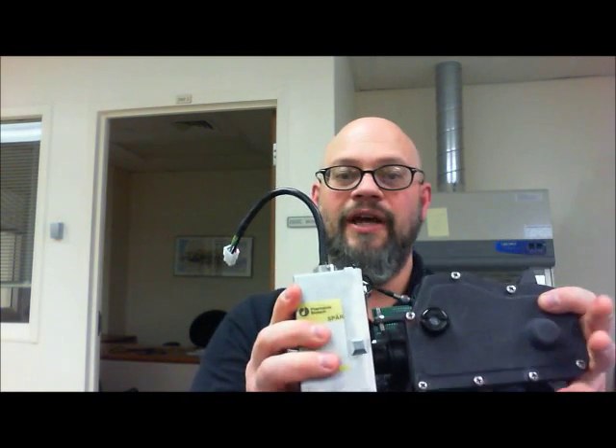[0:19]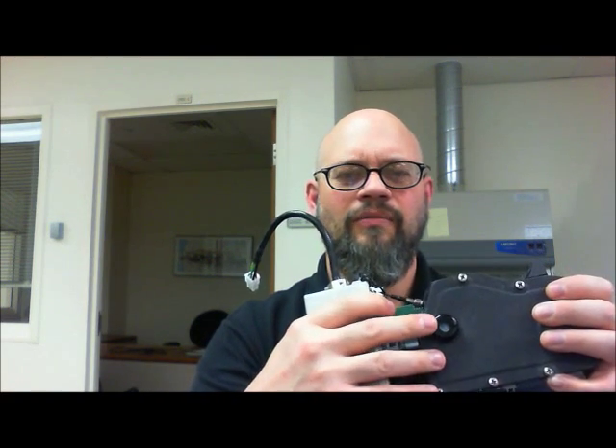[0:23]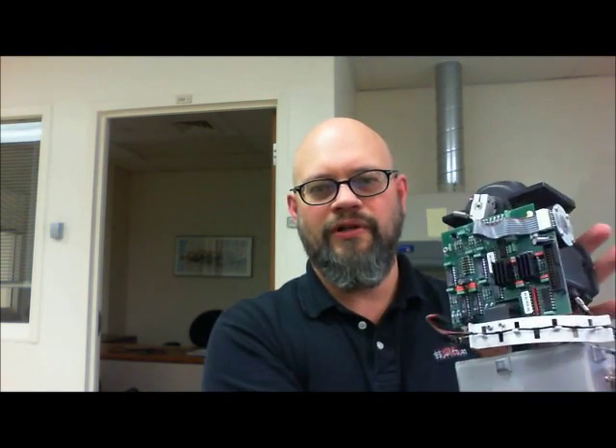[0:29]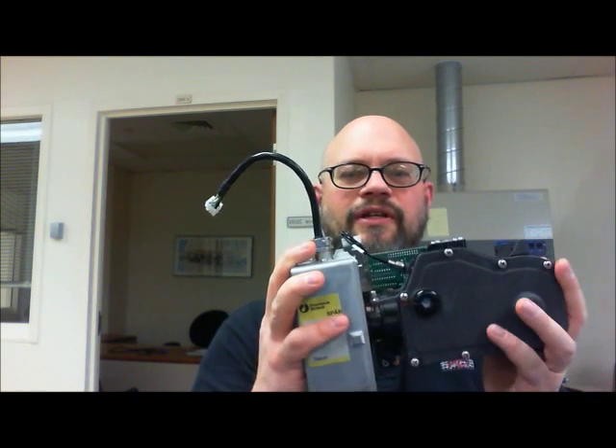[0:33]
I'm here to show you the procedure on how to replace the lamp on the GE UV900 and lubricate the monochromator as well. Okay, so once you get your monochromator assembly out of the UV900, this is what you have. You have a humidity meter here where you can put desiccant if you need it. And you have your board and your fiber optics. So this is your lamp assembly and this is your monochromator itself.
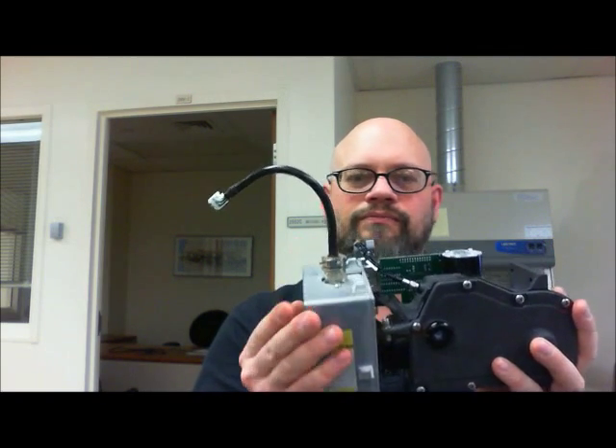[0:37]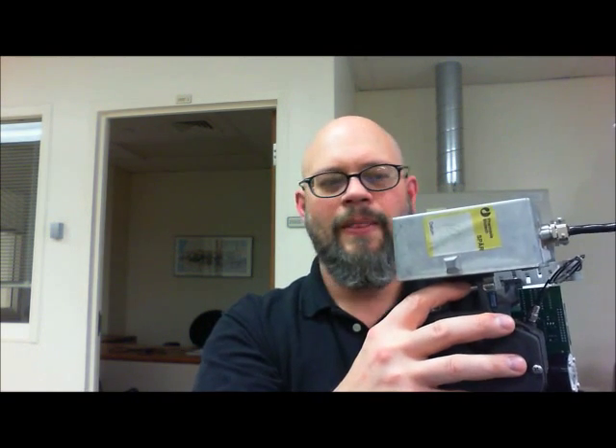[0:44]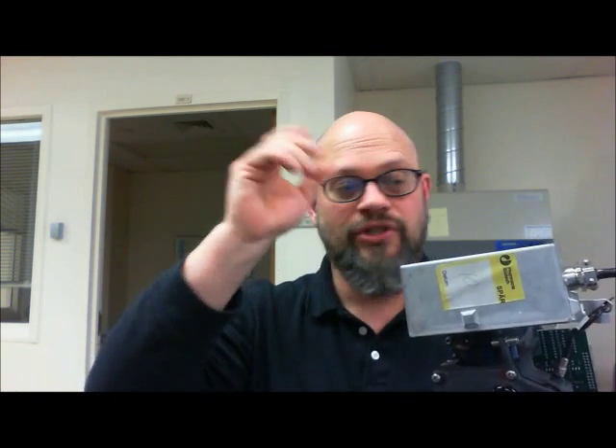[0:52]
Once you have it at this point, there will be two 7mm screws in here. They're difficult to get to. They're not hard to get out, but they're just difficult to get to. It's a little quarter turn at a time. And once you get those out, you go ahead and you work this loose. It's a nice machine fit.
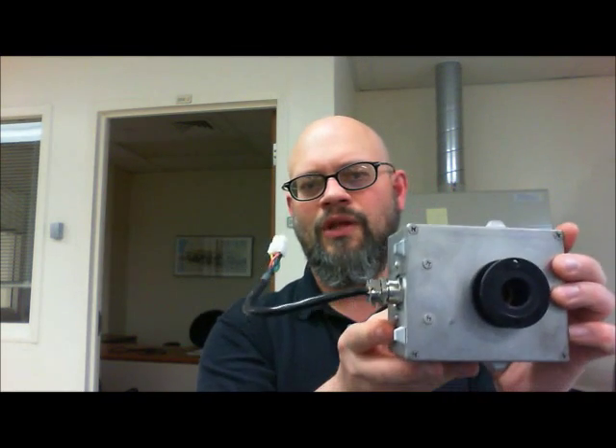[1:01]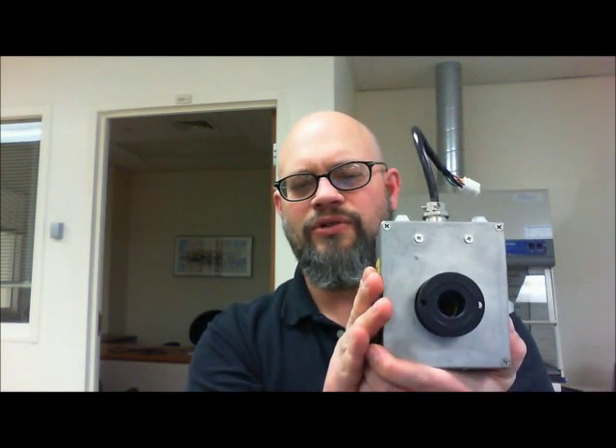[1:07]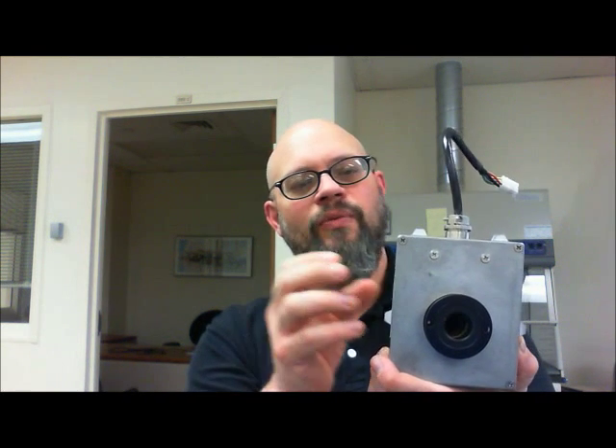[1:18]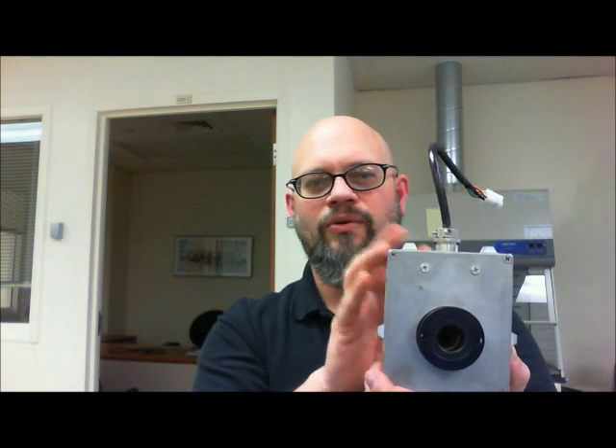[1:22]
So this is your lamp module. It is what it is. This is a GE. You used to be able to source the UV lamps and just replace the internal lamp to this assembly and just use the whole thing over again. But I'm no longer able to source those lamps. So we can order these from GE or we can order them from Sontec, and you can contact me or we have the part numbers available for these.
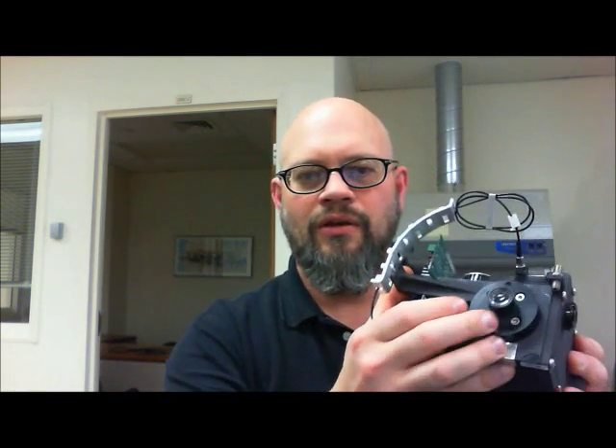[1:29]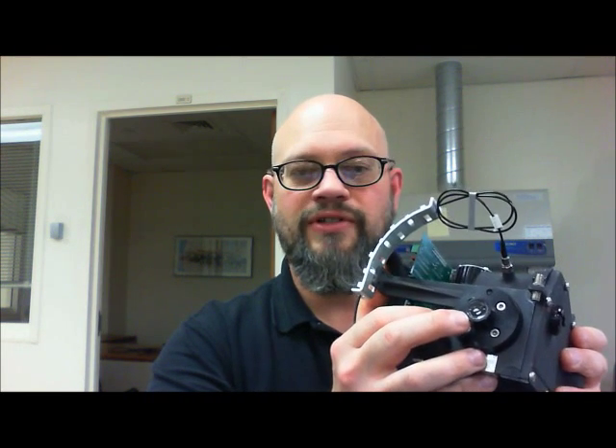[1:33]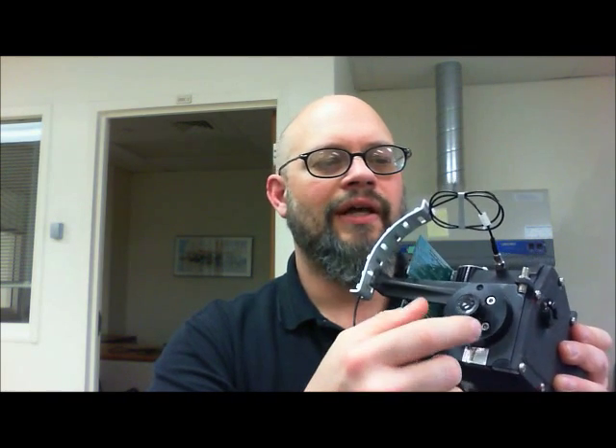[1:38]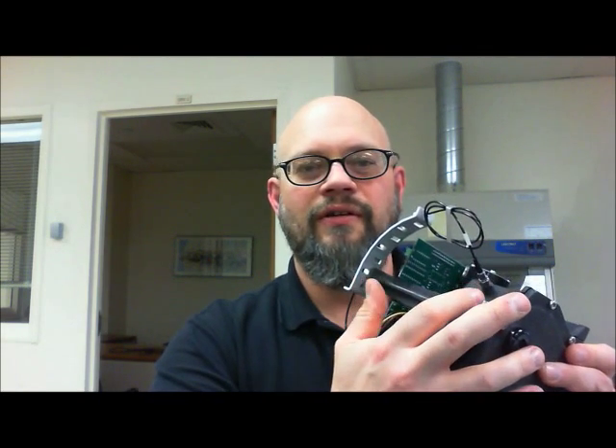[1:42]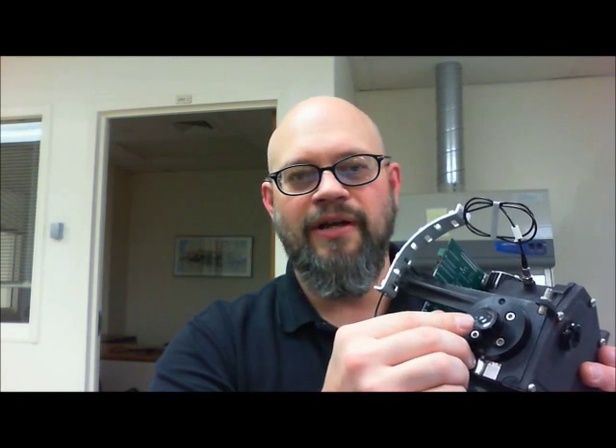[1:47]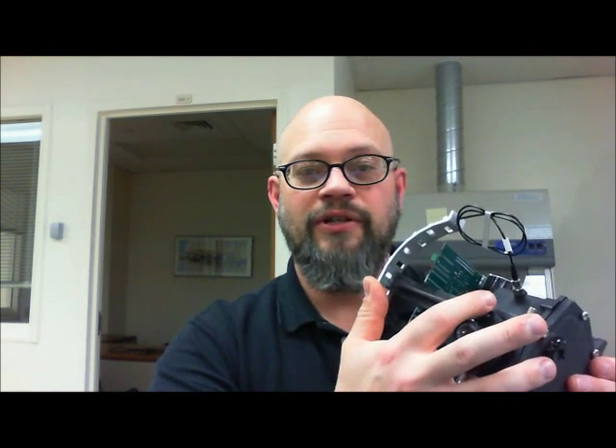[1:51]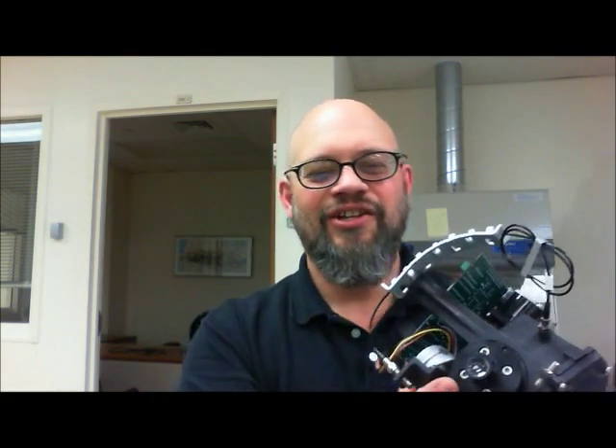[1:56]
Once you get that done, you have a lens in here. This lens on the older systems will fall out. The UV light degrades the epoxy that holds this lens in. It will fall out. This is a fairly expensive piece of equipment. Go ahead and try and epoxy it back in. I've had it work most of the time. This particular one it didn't work, which is making a good training piece. So once you get that done, hopefully this didn't come out.
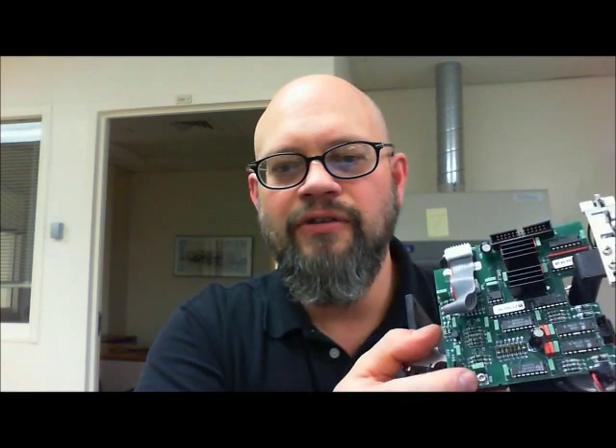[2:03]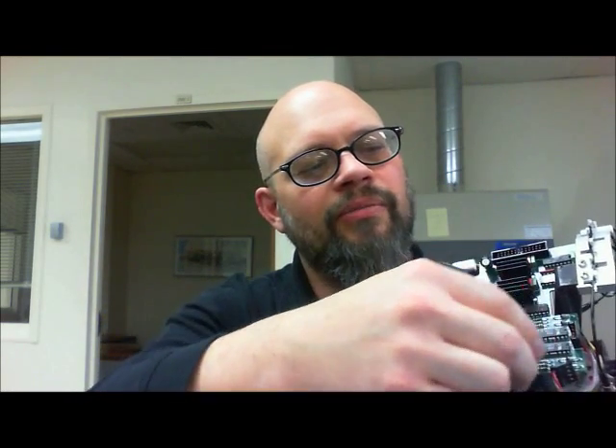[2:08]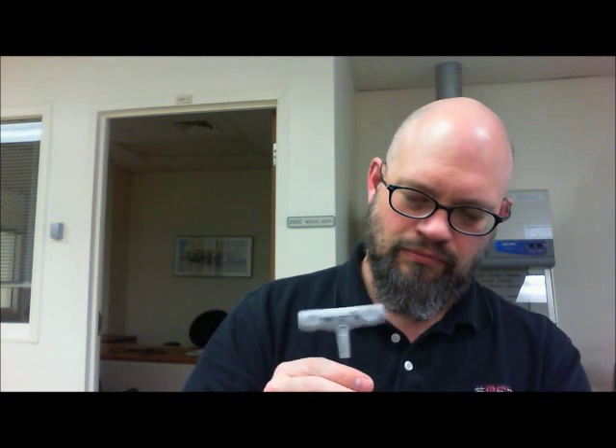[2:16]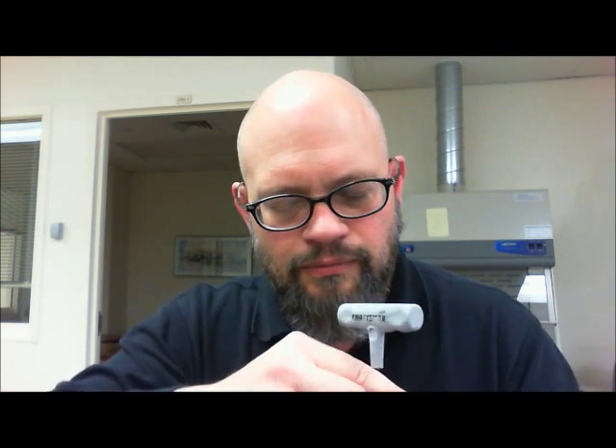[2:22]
You pull the lamp assembly off and then you turn it around, and then you have a 2.5mm hex here, and under this ribbon cable there's another one. So you go ahead and pull all your electrical lines off, and we'll go ahead and get these off. Just takes a second. And we pull the board aside. And what you're left with is
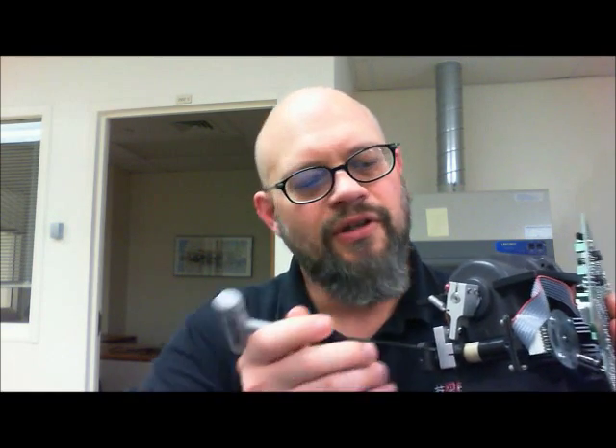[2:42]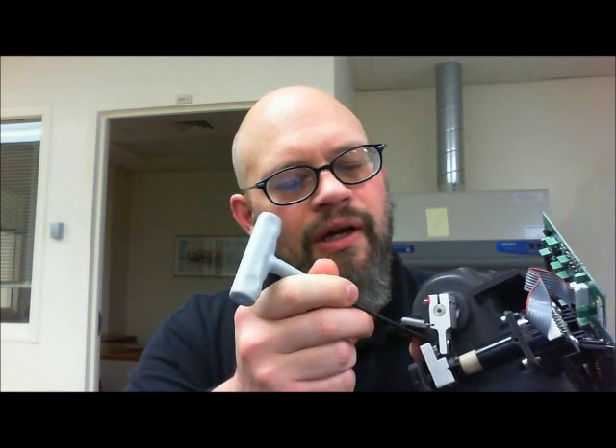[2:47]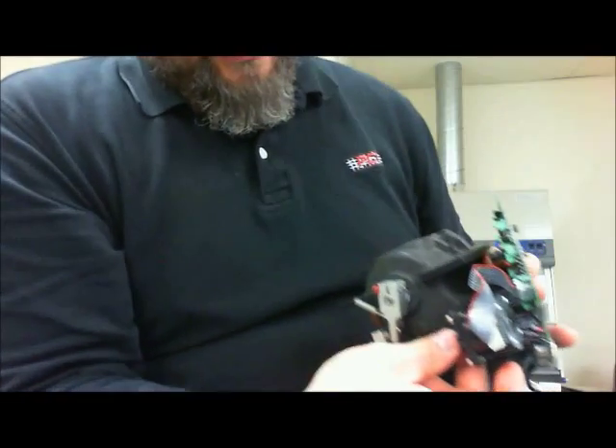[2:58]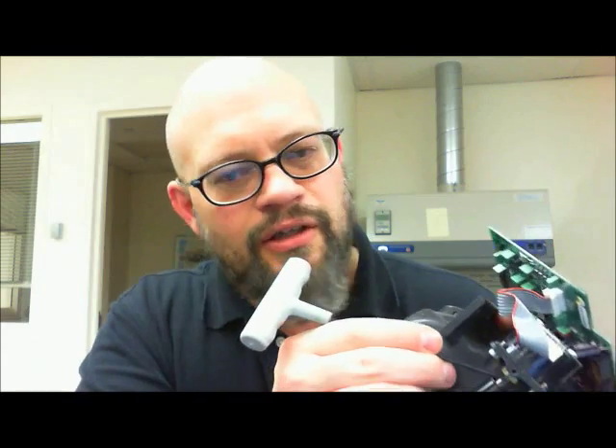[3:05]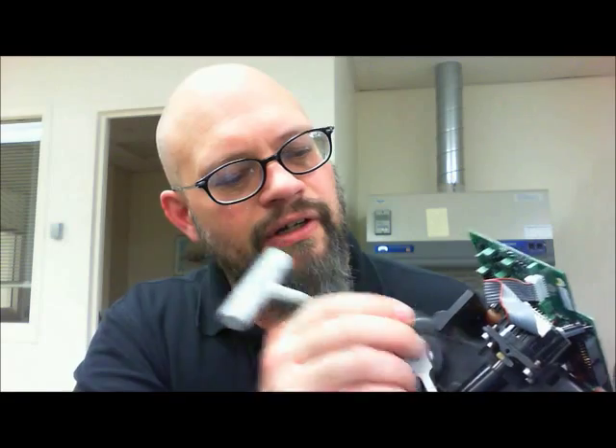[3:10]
this assembly. So we have an area here where it needs to be lubricated. It's just a small bearing surface. Just a drop in there will work fine. And then we have the black sleeve that I mentioned in the SOP. So you want to grab this black sleeve. You've got to pinch it from the front and back. Go ahead and pull that aside, and you manipulate this brass nut here. You turn it until this goes all the way out.
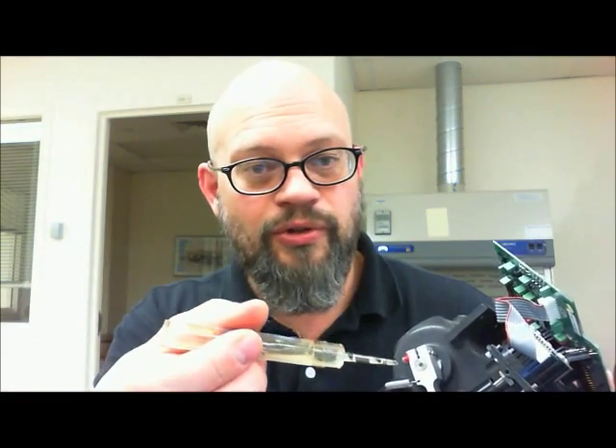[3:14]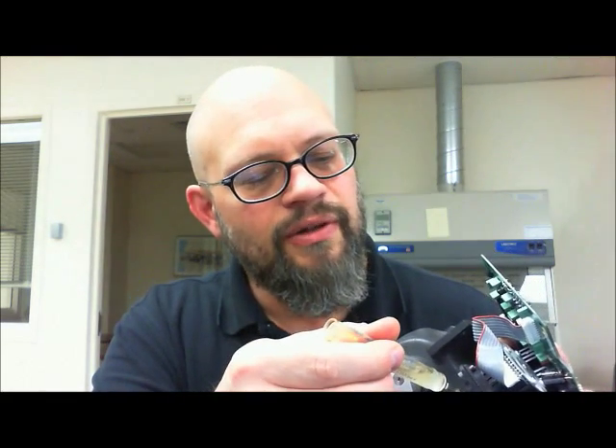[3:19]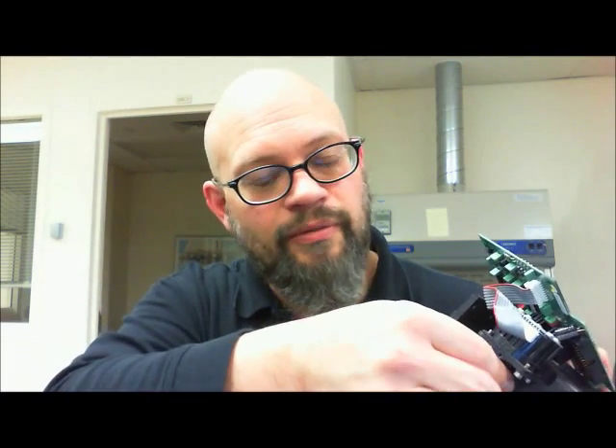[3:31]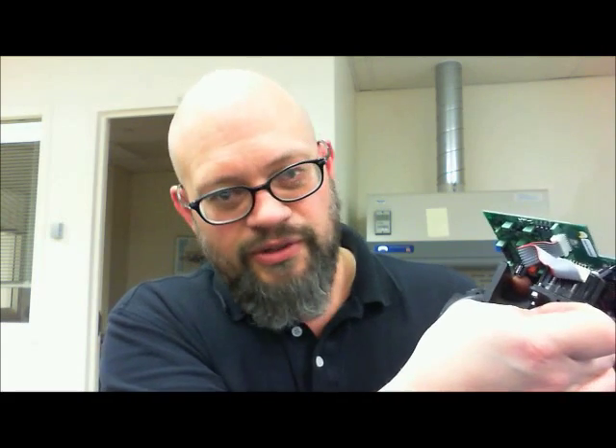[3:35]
I like to use super lube or Tri-Flow, or you can use machine oil, and just give it a little quick bead on these fine threads. And then I turn the screw back. I like to do it halfway so it can find home on its own when you turn it back on. And then you reinstall this sleeve here, which is difficult in this position.
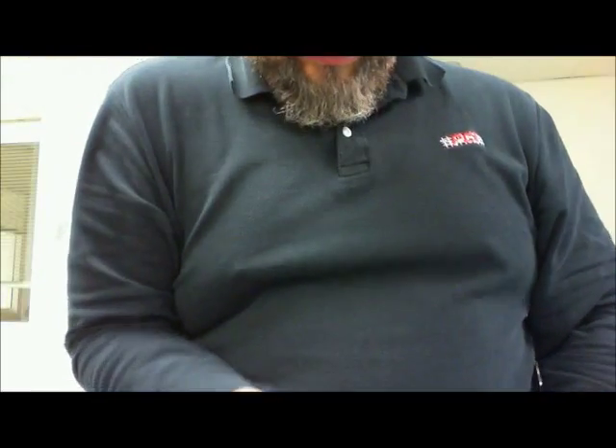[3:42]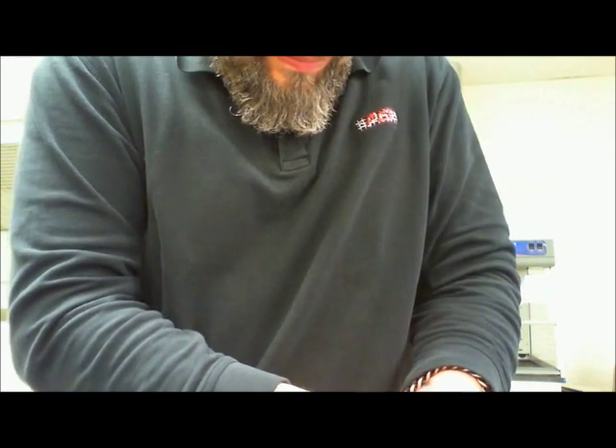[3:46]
Hold on. I apologize for my belly.
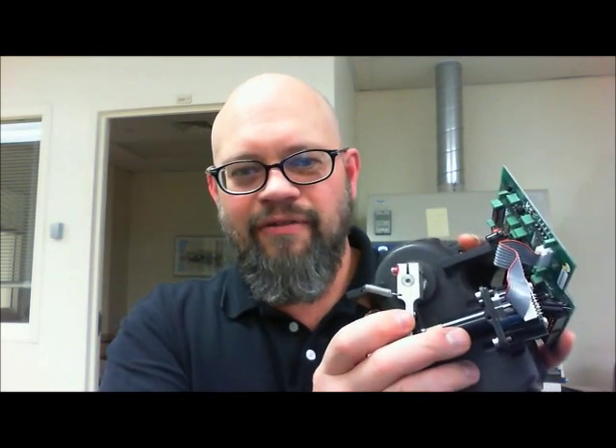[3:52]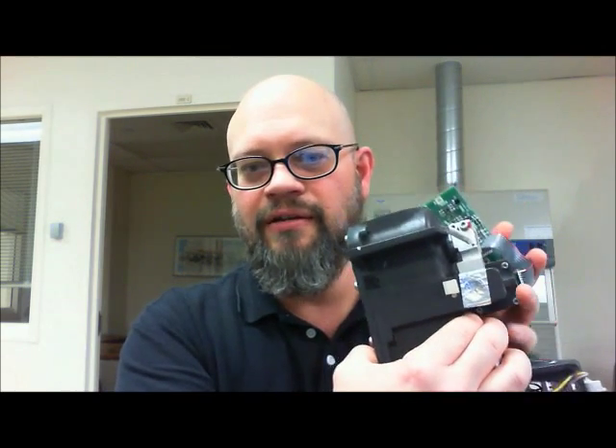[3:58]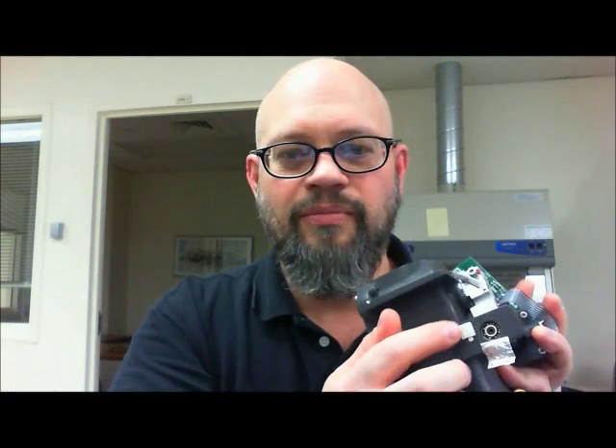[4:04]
And I'm saying you have it back together there. So you have this lubricated and you have this bearing surface here lubricated. So you turn it to the side and you have this piece of foil tape right here. So you pull that off, and there's a bearing race in there with ball bearings. Go ahead and give that a little lubrication. Reinstall this foil tape. It may or may not stick. You might have to replace it with some lab tape or something along that line. Go ahead and do that.
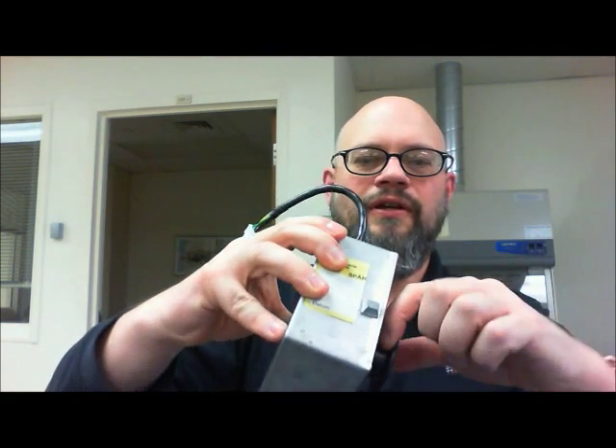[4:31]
And then we're going to reinstall the board. And once you reinstall the board, then you can go ahead and you can put the lamp assembly back on. I like to take the lamp assembly and install the screws in before I put it together. They're difficult to get in here once it's in the monochromator. You just don't have a lot of space. So go ahead and do that and tighten that all back up.
I put it back in the UV900. Make sure that you only hand tighten the fiber optics. If you need to snug them up just a little bit, the fiber optic connector on the main board will break, and it's a very expensive board. Everything on this is very expensive. So go ahead and do that and put it back together, and I like to test it when it's out of the box, or out of the stack, and go ahead and plug it in, fire it up.
It'll go through all its self-tests, and then you go to the maintenance screen, go in there, you enter 1995, and then you go into this area. Okay, once you're in the service menu, go to light intensity check and reset. Go ahead and press that and go ahead and reset it. And then you go ahead and you perform the lamp intensity test, you perform the stepper motor test, the motor stress test, and the block filter test.
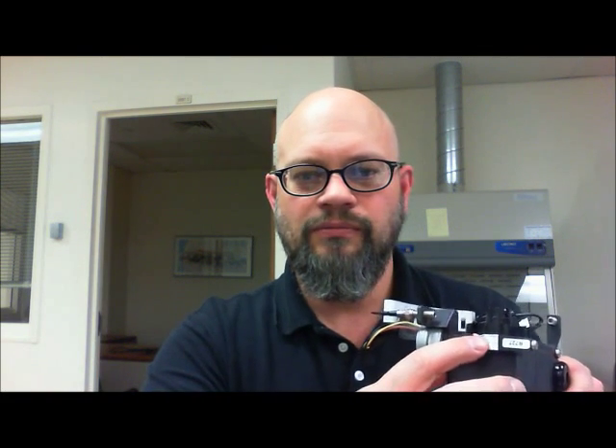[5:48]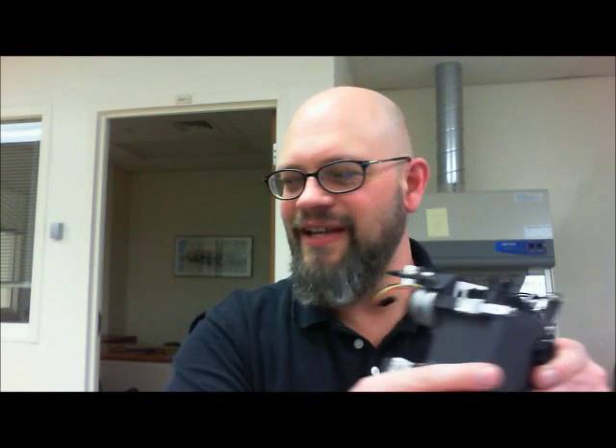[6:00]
I did not mention, I also did not put this back together, this portion here. So you have your aluminum tape here that's going to cover the ball bearing race. This is your block filter. There's no need to take this apart. Do not oil it. Lenses don't like that. But that's where it is. So you go ahead and you do your block filter test, and once all these are checked out okay, go ahead and reinstall the system within the stack, wire it up, plumb it up, and go ahead and safely install it back in the refrigerator.
On a side note, I have attempted to utilize help putting these in a refrigerator. That proved to be more dangerous than it was worth. We ran into trouble. There's just no room. We almost dropped the instrument. It was just terrible. And so it's easier for me, if somebody does help you, just have them hold the door. And what you do is you grasp it and just use your lower back and just lean back.
You don't need to pick it up. Just use your legs and your waist. Just lean back. They're heavy. Just lean back and just ease it in. And once you have it resting within the refrigerator, then you can manipulate it and you can install everything else that you need to install to get it connected to the computer. It's a fairly easy procedure. It's just a bit of heavy lifting, and